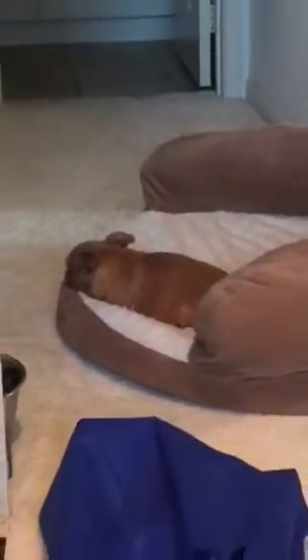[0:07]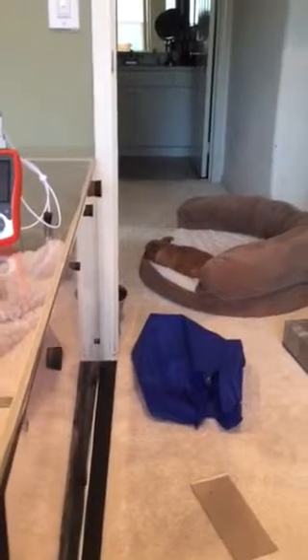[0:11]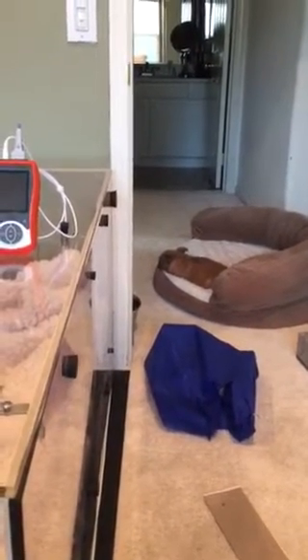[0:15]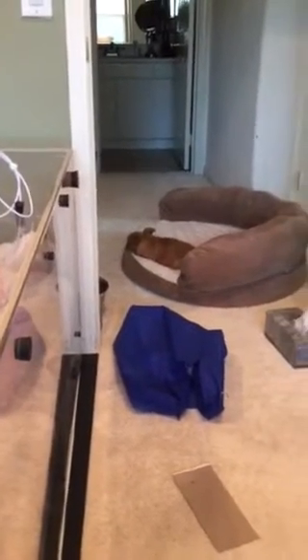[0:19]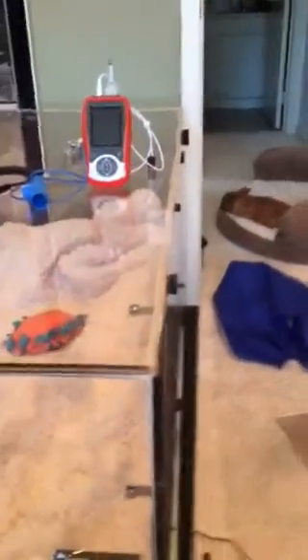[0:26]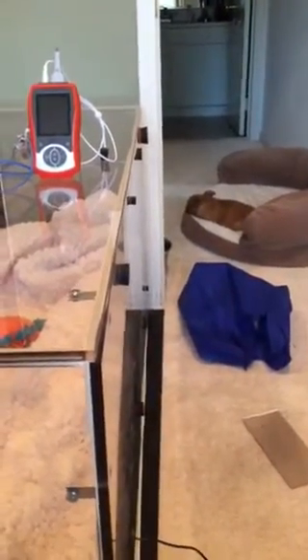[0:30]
He was in the hospital a week ago because I believe he aspirated and then he couldn't catch his breath and he needed oxygen. And the doctors very quickly, within 3 days, wanted me to say my goodbyes to him. But all he really needed was some oxygen and some antibiotics, but they already were giving up on him. So I wasn't going to, because I knew he was doing better.
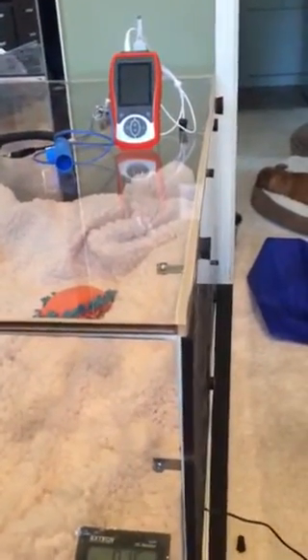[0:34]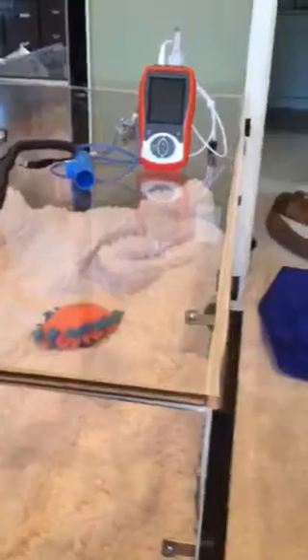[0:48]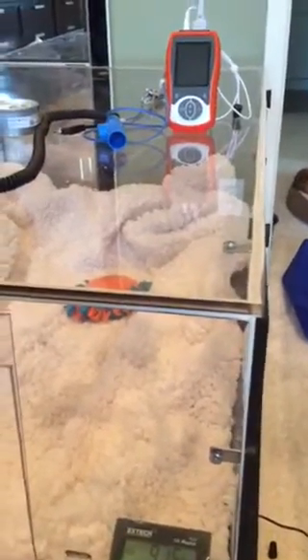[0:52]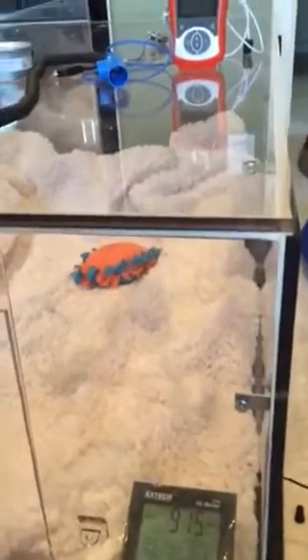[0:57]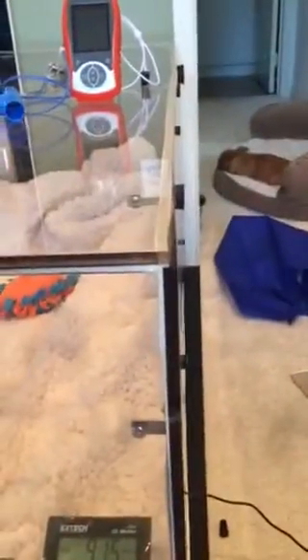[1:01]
And so I decided to make my own oxygen, giving him oxygen myself at home, where he would be better. And it's very difficult to find, but I want to let you guys know what I did. So first thing I did is we bought some material made of polycarbonate, which is much thicker and more durable than plexiglass. You can go places and they will actually cut it for you. So I made this 48 inches deep by 31 inches wide.
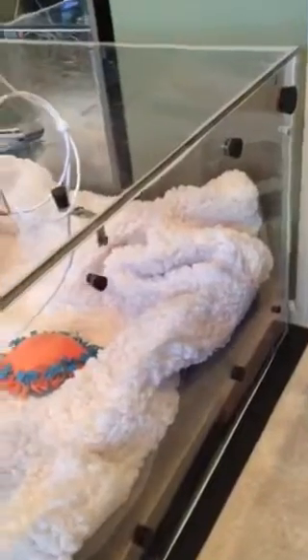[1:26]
And what we did was we just bought separate pieces, put it together with this weather stripping and hooked it together with these clips like this. Then we made different size holes ranging from 1/2 inch to 1.5 inches on the sides, and you can see it's on the bottoms, and also it's on the top.
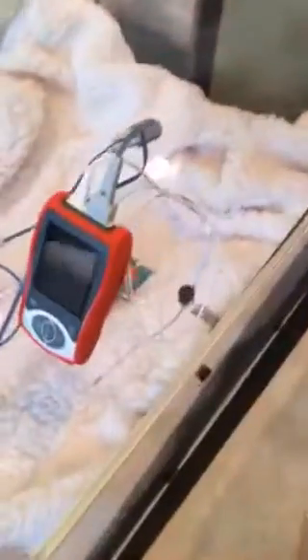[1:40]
So you can see we have those for many reasons, and part of these are, one is we have an oxygen sensor. This is actually a temperature gauge, and it's also a pulse oximeter, so you can check your dog's pulse, oximetry, and see if he is getting good oxygen.
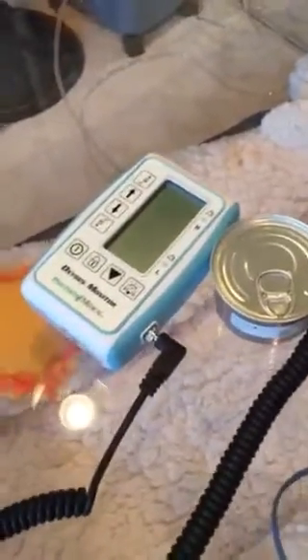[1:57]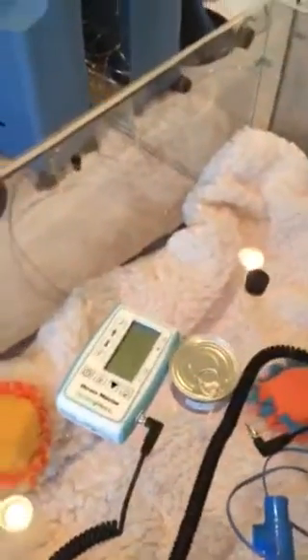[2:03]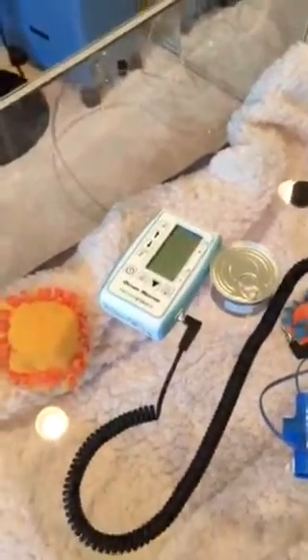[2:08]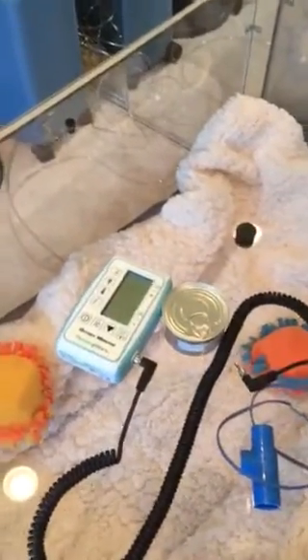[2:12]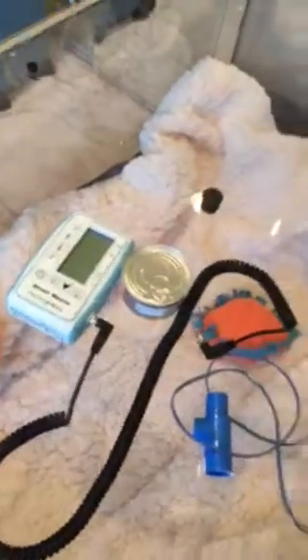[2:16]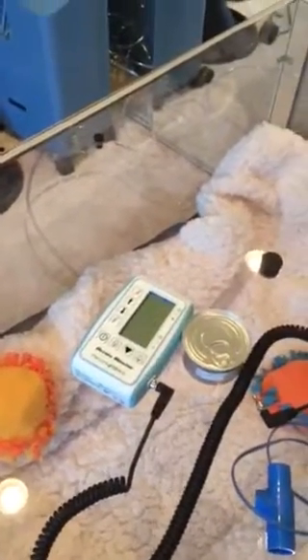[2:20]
Second thing is I got an oxygen meter. This is very hard to find because most oxygen meters only read up to 25% oxygen, because in normal air, it's about 21%. So this has to measure up to 60% oxygen, which is what he was in. So this actually goes up to 100%, and I had to get this. And I'll put the links for where I bought all this stuff so you can easily find out where to get it. It took me forever to find.
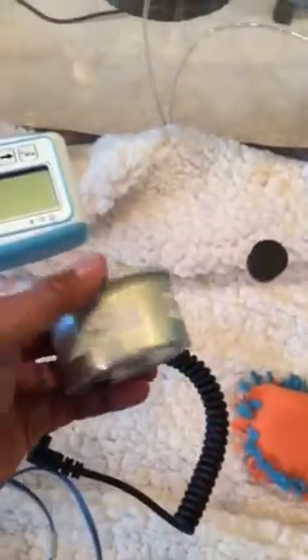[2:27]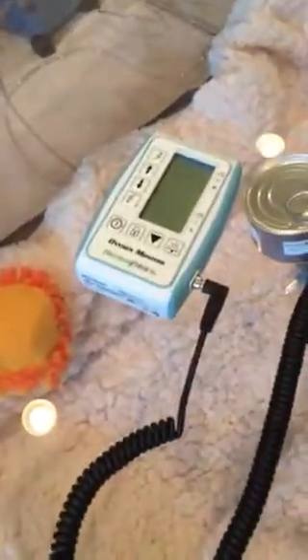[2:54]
This is actually the oxygen sensor, which goes bad after like a year or two, so I did not open it yet. And these are 2 1-inch hole openings that we're going to be using for pumping in AC inside, because it gets very hot in here, and so you have to control the temperature. I have a portable air conditioner that I'm going to run 2 pipes into these 1-inch holes to put in AC when required. So this is the oxygen monitor.
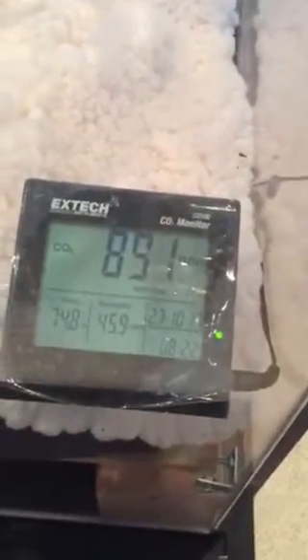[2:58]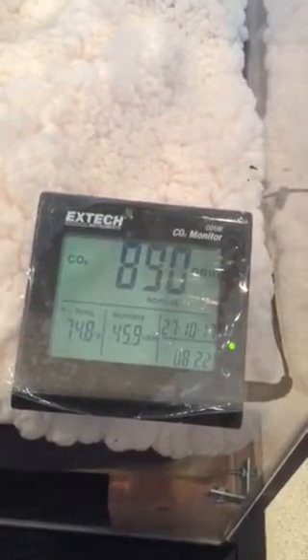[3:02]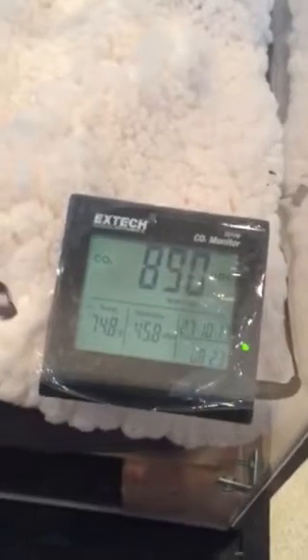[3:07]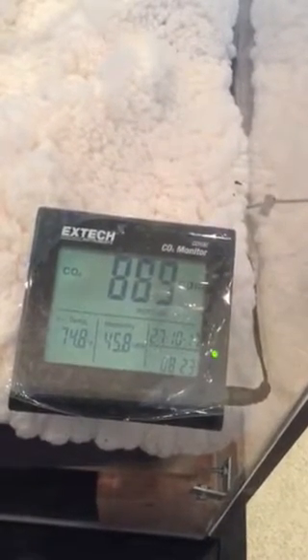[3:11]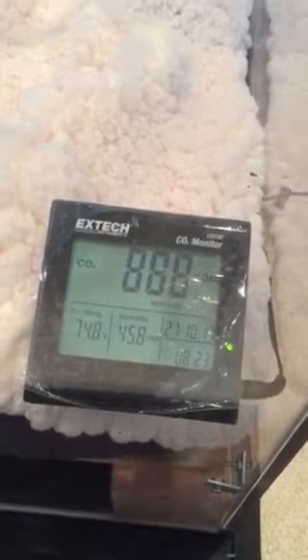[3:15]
And then over here, I have a CO2 monitor. So the biggest thing we're concerned about is whether or not the carbon dioxide could stay in here, because it'll float to the bottom because oxygen is lighter. But the problem is that with CO2, you gotta make sure it escapes. So what we did is we built a false bottom. So you can see right here,
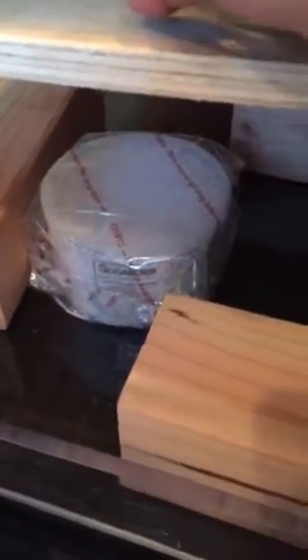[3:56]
we put 2 pieces of plywood over here, about 14.75 inches wide by 48 inches deep. I just got some 4x4s in here, and I put it all along so that we could raise it up. And as you can see, there's some room over here, so the CO2 will come out through here. And we got these oxygen crystals too, because you just open this up and it'll automatically absorb the CO2. So that's another fail safe. So not only will we have some ventilation out here for it to go out, but we have a gap over here for the CO2 to come out, and those crystals will help absorb the CO2.
And we bought this pet bed, which is a cooling pet bed, and it actually has gel packs that go all the way inside of here, so it'll cool down your dog on his paws if it gets really hot. We also put these refrigerator flaps, just some vinyl that we put over here so that when you open up the door, the oxygen won't just escape. So it'll just stay like this.
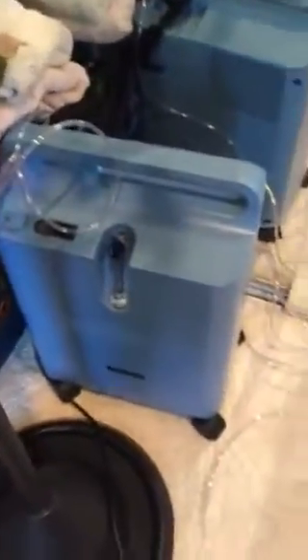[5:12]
And then we can shut it. I'm putting another vinyl flap with Velcro all over here to seal it. So when it's shut, that's how it'll seal. But you can see, I also had to get an oxygen compressor. And that's that. And so it'll pump in the oxygen over here.
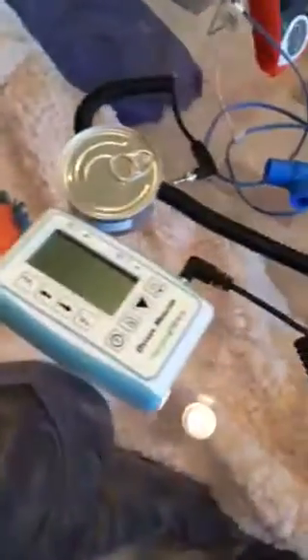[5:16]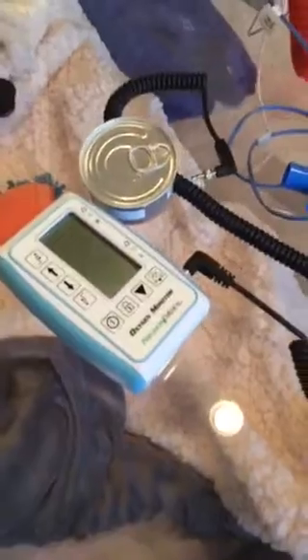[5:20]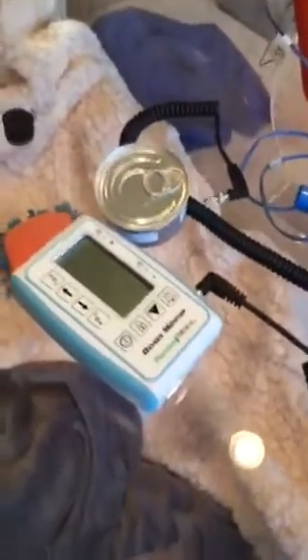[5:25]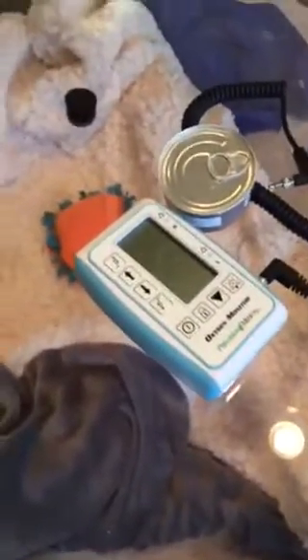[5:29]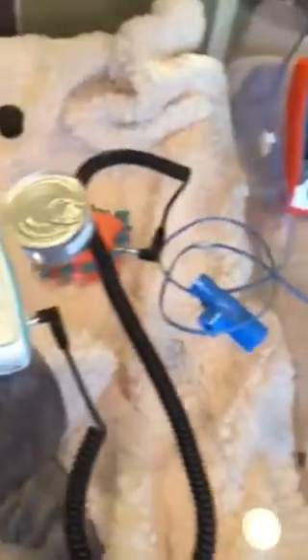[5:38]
And this is how I check. This is actually a monitor that tells you if you're above or below, and it'll set alarms. So if it goes above or below, you can make adjustments accordingly. It's very important because these have an alarm system, which is very important to keep monitoring. So this is the setup I made. It took a while because I had to find all these parts and pieces, but it can be done, and you can do it within a few days if you put your mind to it. And I will give you links as to where to buy all this stuff.
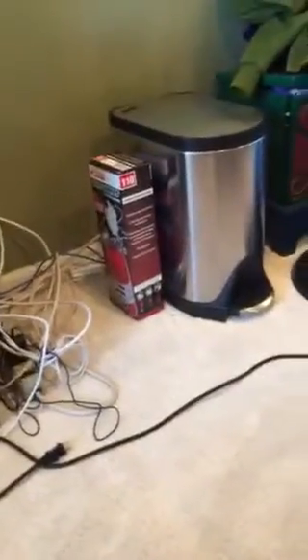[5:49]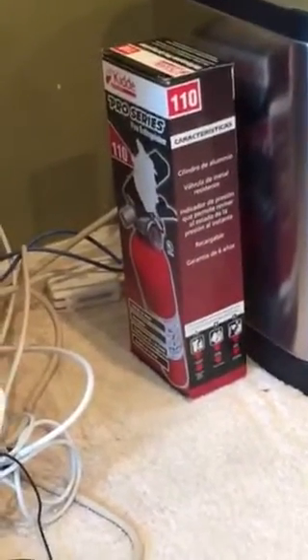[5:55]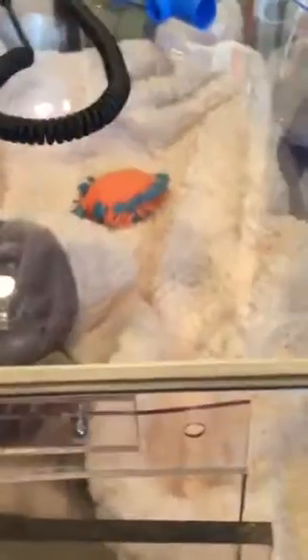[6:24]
And bear in mind, because you're at high oxygen levels, you will need to make sure you have a fire extinguisher right nearby you. And I also put it on top of this rubber, because if you have any kind of static electricity, even, it could ignite, and you don't want to have that happen. So that's why we put it on a rubber mat, so that anybody who comes here will have to step on that first. And then I got these from Home Depot, these little rubber stoppers of all different sizes, that will help plug the gap.
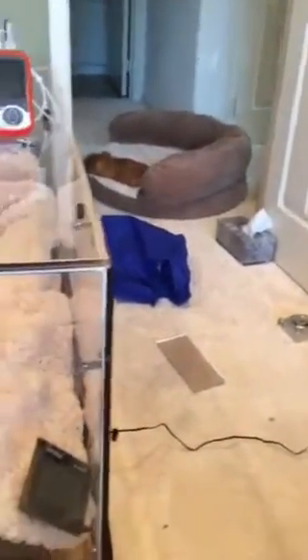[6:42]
So I'll tell you where I got all the parts to make it easy for you, and certainly let me know if you have any questions. Hope your dog doesn't have to go through this, because mine did recover, as you can see, but they still tell me he may need oxygen, so I have it all ready to go when he needs it.